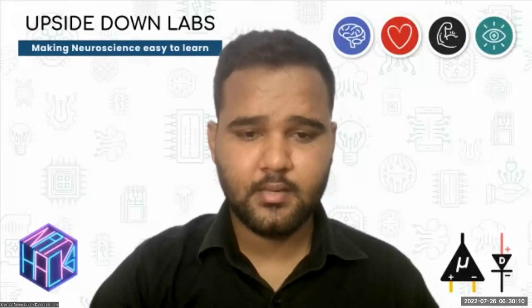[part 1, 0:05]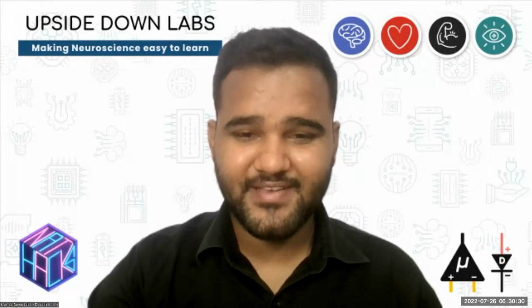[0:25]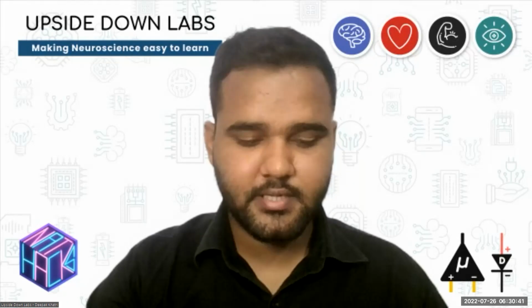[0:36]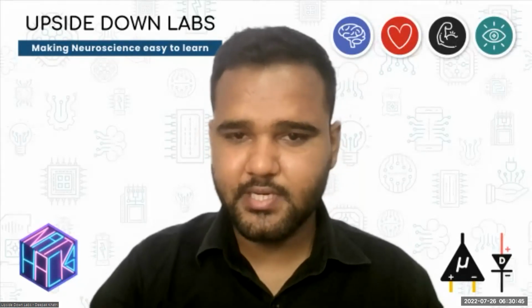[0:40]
So we just start from here, or do we have anything? Yeah. Please go ahead, whatever you have on your agenda. Okay. Perhaps we'll wait just maybe one or two minutes for a couple more people to trickle in. Yeah, sure thing. I'll just start or test sharing my screen. That sounds good.
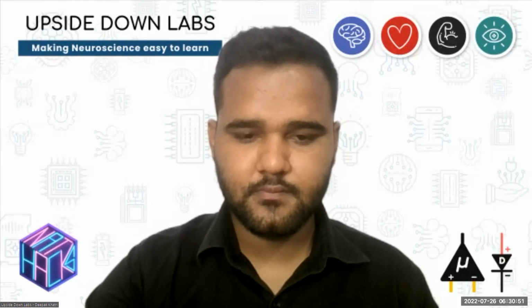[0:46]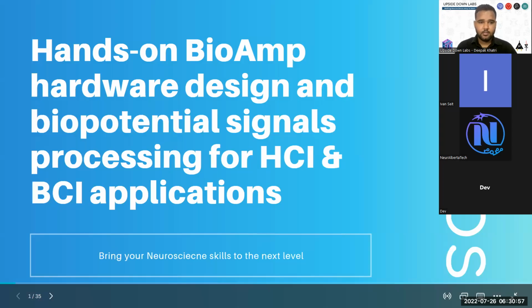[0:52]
I hope everyone is able to see my screen. Yep, we can. And my audio is good, right? Yep. Okay. Let me know when I should start.
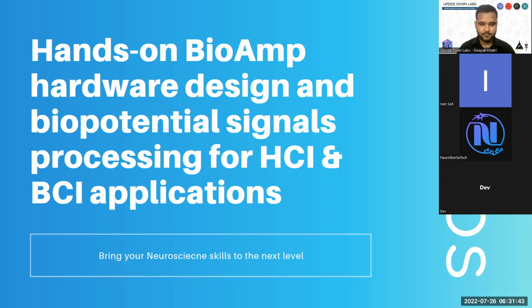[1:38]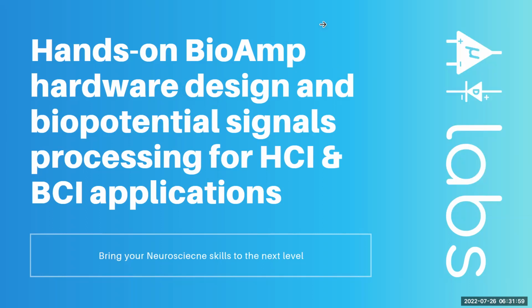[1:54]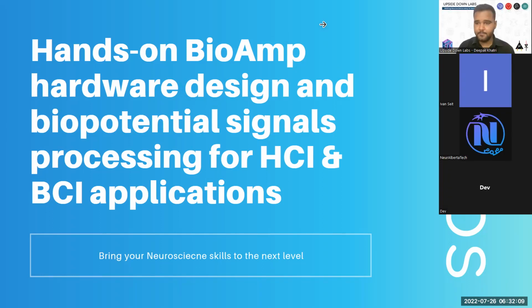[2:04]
We'll give it till 7:02, perhaps. And then this will be recorded, so anybody who misses any bit of it can go back and watch that. So it shouldn't be too big of a problem. Okay, we should be good to start now.
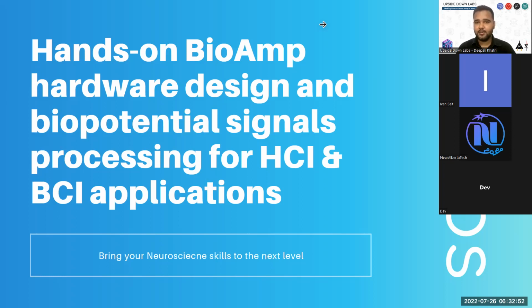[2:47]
Before that, I presented a crude design of a basic BioAmp, you can call it version 0, in 2017. I presented it as a very low cost biopotential amplifier for prosthetics, human computer interface, and things like that. It was a presentation opportunity at my university. Since 2016, I have been working on the designs. It was an iterative process. I learned a lot during the process, and some things I can share with you that will help you to
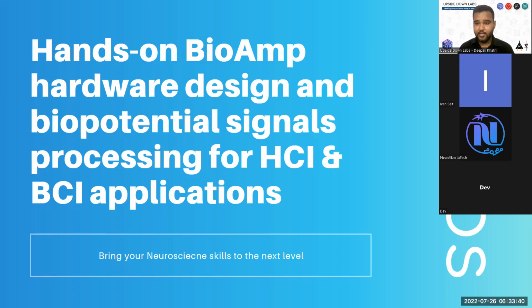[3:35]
design your own BioAmp. So basically, this pre-workshop is on designing or understanding how a biopotential amplifier, the device we create at Upside Down Labs, the BioAmp, works, and how to do the signal processing of the signals you are going to record from your biopotential amplifier for human computer interface and brain computer interface. Basically, I'll try to bring your neuroscience skills to another level.
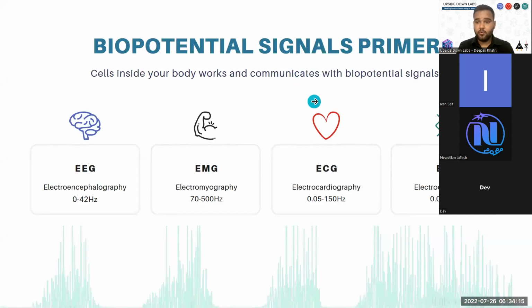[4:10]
If you don't already know, the biopotential signals generated from your body include EEG, EMG, ECG, and EOG. The frequency bands we have mentioned here are debatable, but basically EEG, or electroencephalography, is a signal generated from your brain, which comes in a frequency band of 0 to 42 hertz or something like that. And this EEG is used to basically create brain computer interfaces like your Neuralink and such.
Then we have EMG, or electromyography, that comes in the frequency band of 70 to 500 hertz. Some scientists claim it to be around 0 hertz to 2000 hertz or something like that. So it is debatable. You can check online, and maybe you can create your own biopotential amplifier with a very wide band and let us know your results.
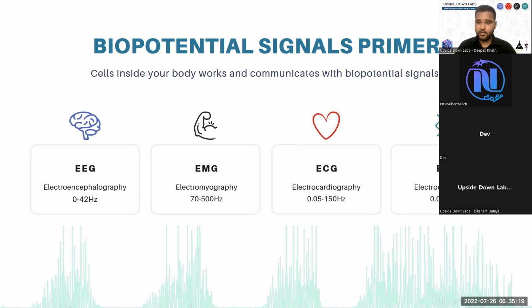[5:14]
Then we have ECG, or electrocardiography, which is a signal generated by your heart. Basically, a sinus rhythm is created which travels to other parts of your heart and creates an ECG, the signature that your heart is beating, and it comes under 0.05 hertz to 150 hertz. When we record ECG, we usually tend to go with 0.5 hertz to 40 or 45 hertz to reduce the 50 hertz and 60 hertz noise. Most of the time it is to reduce your 50 and 60 hertz noise.
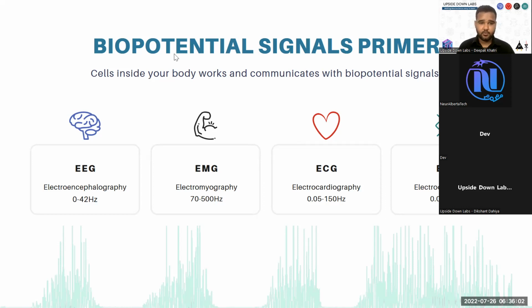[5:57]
Then we have electrooculography, or EOG, which is basically the signal generated by your eye. Your eye has a dipole, or polarity, and when you move your eye, the polarity creates a deflection, and you can record it on the surface of your skin. This signal is also debatable, but it comes under 0.05 hertz to 20 hertz.
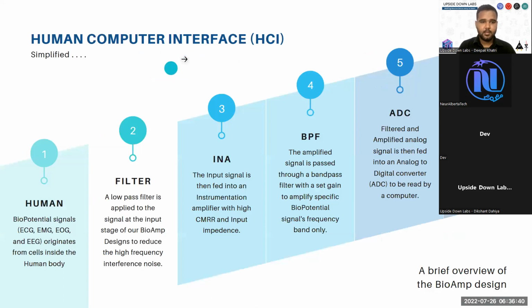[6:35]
This is a very simplified version of a human computer interface we tend to use at Upside Down Labs. Biopotential signals generate at a human level on your skin. We record everything non-invasively. So your biopotential signals, which include ECG, EMG, EOG, and EEG, originate from your cells inside the body. These biopotentials come in various voltages, and EEG is very minute, in microvolts. Then you have EMG, which is very prominent on skin near your muscles, and it comes around some millivolts. To create a human computer interface, you basically create a biopotential amplifier, or BioAmp.
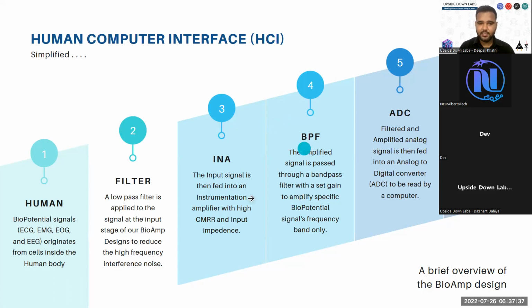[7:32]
This is basically the part which is your BioAmp. First, you initialize the recording or connection process via a filter. It is a low pass filter to reduce the high frequency interference noise, basically the noise created by all the EMI generating devices around you, that includes your mobile phone towers and your tube light, things like that. So basically, we want to reduce the signals that are going to be picked up by our biopotential amplifier, because the electrodes that we are going to use with it act as antennas, and they usually pick up these signals quite well.
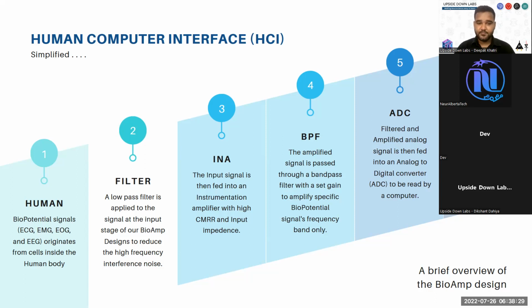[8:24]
So we filter the input signal via a low pass filter. Then we have an instrumentation amplifier stage. An instrumentation amplifier is a neat little hack you create using op-amps. It is a very detailed and very well studied design for increasing the common mode rejection ratio of your basic general operational amplifiers, and increasing their input impedance. You want both to be high.
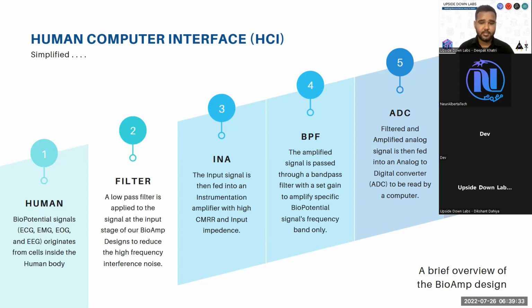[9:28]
CMRR should be more than 100 dB, and your input impedance should be in the range of 100 mega ohms, to provide a very low path for the current to flow from your skin to the amplifier, because your skin impedance is in some mega ohms and you want the amplifier to not load the skin. Our BioAmp example is around 1 giga ohm, and above that it doesn't load the skin at all. And CMRR, which is common mode rejection ratio, is more than 100.
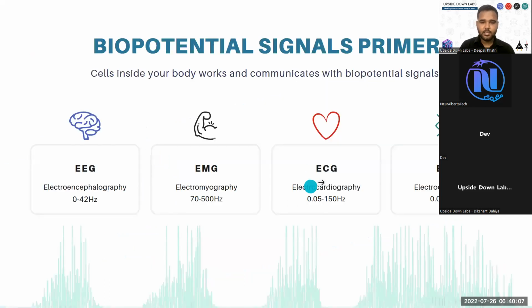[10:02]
Then we take the instrumentation amplifier output and pass it through a band pass filter. Basically we try to use what we have here. So we create a hardware band pass filter that will allow these bands to be passed through the filter and remove all the others and discard everything as noise.
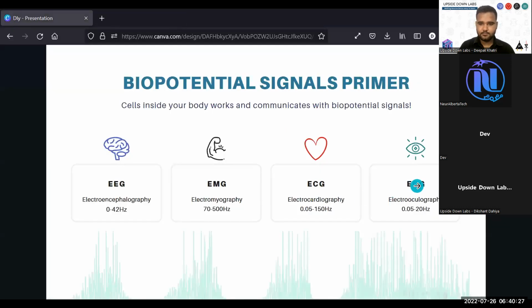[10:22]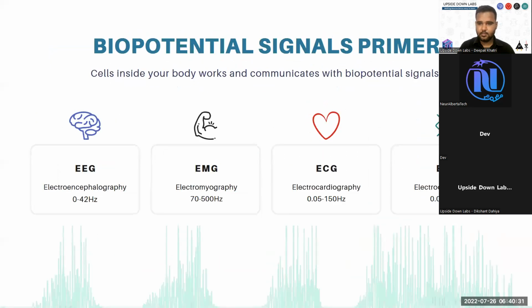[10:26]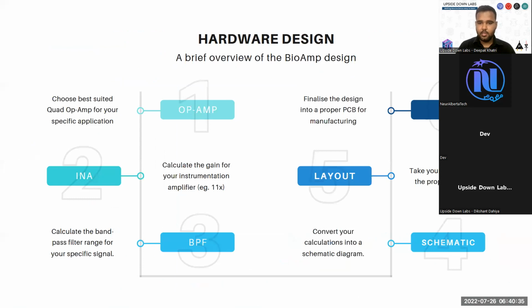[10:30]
Then the band pass filtered signal will be applied to the ADC, which is your analog to digital converter. These ADCs will either be connected to an MCU, microcontroller unit, or these can be standalone units directly connected to your main computer. These are basically used to convert your analog signals to digital signals that a computer can read. And this entire setup is basically your human computer interface.
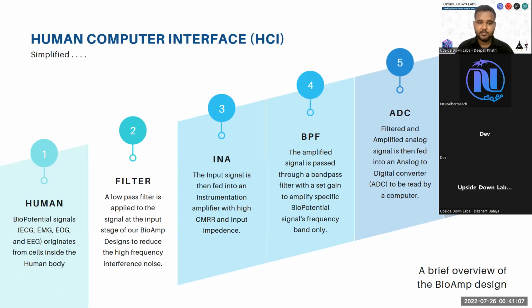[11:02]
You start with the signals generated from the human body and you convert them to computer readable values so that you can infer some information from the signals you are going to record. That includes EEG based data for meditative data, as in if you are focusing, if you are sleeping and things like that. Your ECG data, like your heart rate, and if you have any heart ailment you can detect that also. For EMG you can use the signals for healthy patients to improve their workout, and for patients who lost their limbs to create prosthetic arms.
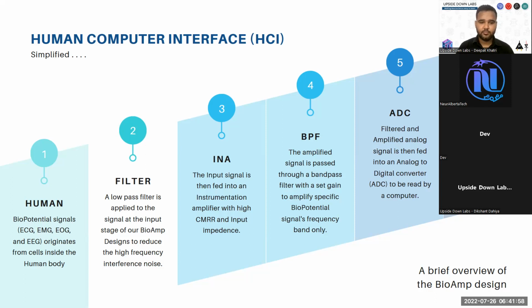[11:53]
So you can create a human computer interface in a way that you record the signal from the remaining part of the muscle, and you try to infer some information from the signals to control motors in a way that you can create a prosthetic arm. Then for EOG you can create low latency game controllers and other peripheral devices that augment human capability in a scenario where other means of communication with the computer are not available. Basically, when a human is paralyzed, you can use EOG signals. Most of the time, your eyes will still be functional, so you can create an EOG based interface between a human and a computer to provide some ability to control the computer or provide information to the outer world just by blinking.
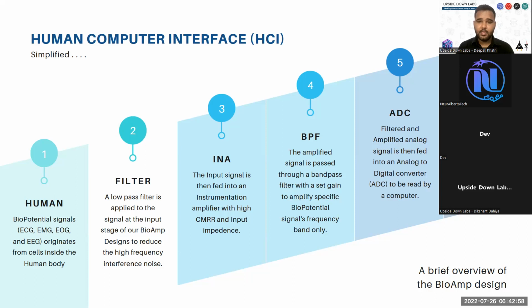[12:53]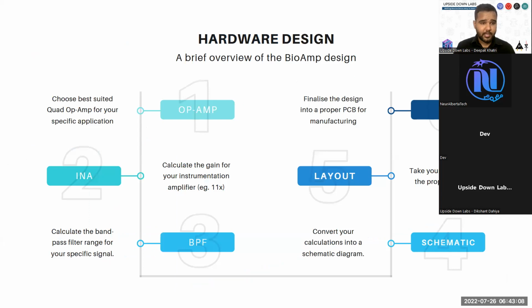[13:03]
Then we covered EEG, EOG, EMG, and ECG. For the BioAmp hardware design, this is mostly how we design BioAmp at Upside Down Labs. There are various different methods, and this is what I came up with after years of designing biopotential amplifiers and trying to build a very sophisticated piece of hardware that can record your biopotential signals
in a way that you can easily record EEG signals, because EEG signals can be the hardest signals to record because of the way we use electrodes. We don't have a very direct connection to most of the brain, and we tend to use either gel based electrodes, and if you go with dry electrodes it makes the impedance very high. The electrode impedance should be low, the instrumentation amplifier impedance should be high. So by electrode impedance I mean the connection between the electrode and the skin should be the lowest possible so that we can record the signal easily.
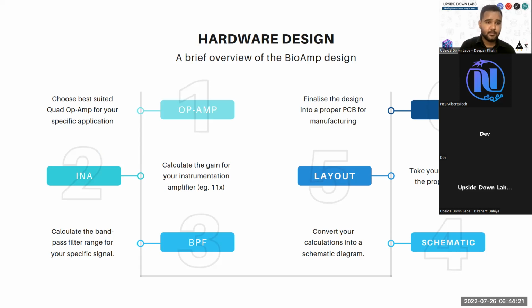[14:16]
So if you want to create a biopotential amplifier, choose the best suited operational amplifier. A quad operational amplifier is recommended for your specific application. We will talk about the characteristics. You will look into the operational amplifiers in a later slide. Then you have to do some calculations that include the calculation for your instrumentation amplifier and the band pass filter.
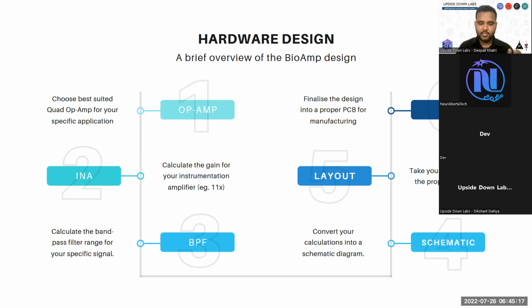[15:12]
For the instrumentation amplifier, you go about setting up the gain. We usually keep the gain at 11x, and for the band pass filter, we change it around. For EMG, we keep the gain at 200 with a frequency band of 72 hertz to 720 hertz. Then for EEG, we keep the gain at 1000, and we keep the band pass filter from 0.5 hertz. We try to go down to 0.5 hertz, but some parts, or how we use the part size, limit us in that way. So we only have 3.3 hertz to a specific endpoint that is around 40 hertz to 45 hertz.
This biopotential amplifier that you create for the brain can also be used for your heart and your eye. The overall gain for your EEG system, that includes your brain, heart, and eye biopotential amplifier, will come around 11,000 gain. And for the EMG biopotential amplifier that I talked about, with 220 gain for band pass and 11x for your INA, it will come around, I think, 2,400 something.
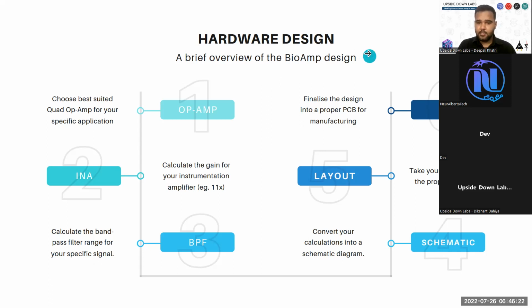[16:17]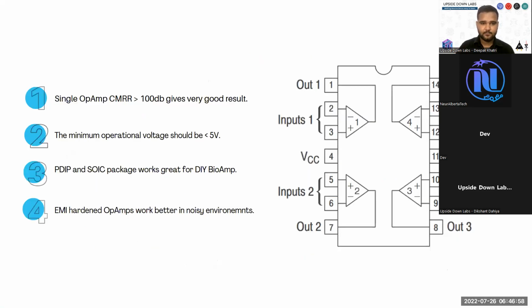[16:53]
Then we convert everything we have calculated and finalized for the operational amplifier into a schematic. In KiCad, we use open source software for all our designs. So for schematic design, we use KiCad. Then for layout, we also use KiCad. It's basically the same EDA suite. Finally, we have our PCB. We will look into the schematic, layout, and how the PCB looks in later slides also.
For a quad operational amplifier, you look for CMRR to be more than 100 decibels for a good result. That will eliminate your interference noise, your 50-60 hertz noise, very easily. Even if the charger is connected, our BioAmp chip doesn't pick up 50-60 hertz noise in most scenarios. If the impedance of the electrode is very good, you will not see any deflection or any 50 hertz noise. Even if you don't use any software filter, you will not see any 50 hertz noise.
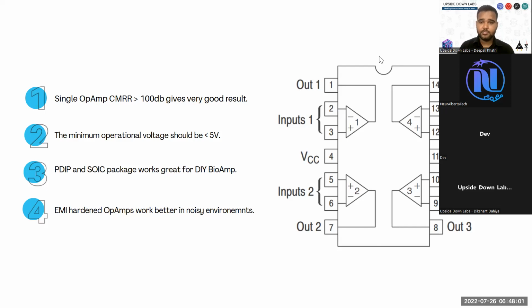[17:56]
The minimum operational voltage of your quad operational amplifier, or any operational amplifier you are going to use, you can also use 4 discrete operational amplifiers, should be less than 5 volts because all your MCUs, like your Arduino, work on 5 volts. If you are going towards other modern microcontrollers, they are going to work with only 3.3 volts. So try to find an operational amplifier that starts working at 1.8 to 2.7 volts and works at least till 5 volts. So it shouldn't be less than 5 volts, and it shouldn't be more than 5 volts if the maximum operational voltage is considered.
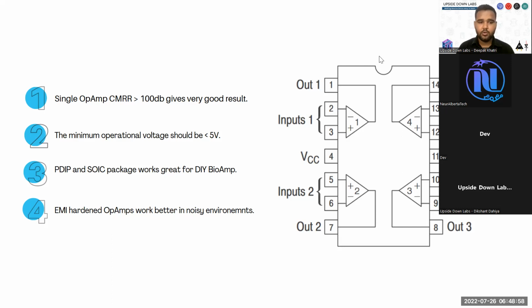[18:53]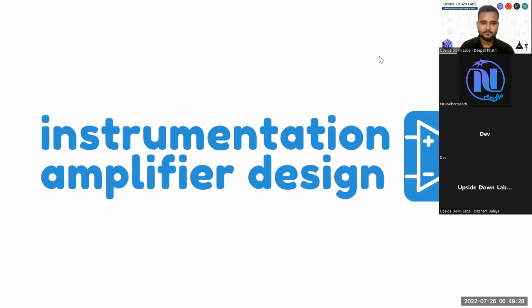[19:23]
Then you look for the package for your IC. If you are trying to do a DIY setup for the biopotential amplifier, go with PDIP, or plastic dual inline package, for your operational amplifier. Your LM324 is a good option. If you are trying just for the EMG, you can try LM324. For your EOG and ECG, you can try TL074 at a higher voltage. The old TL074 starts working at 7 volts, so I don't really recommend that, but if that is the only option, you can use it with higher voltage. Let's say at 9 volts, you can use a 9-volt battery. Don't use any power supply or power adapter to power your setup while you are developing the BioAmp. Then if the chip has EMI hardened characteristics from the manufacturer, it is better in noisy environments.
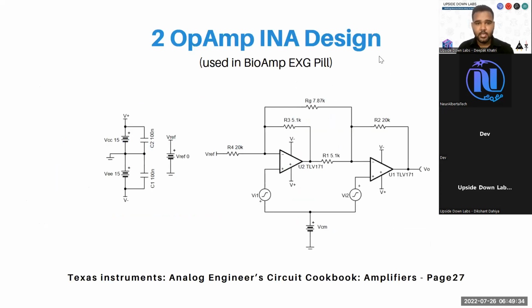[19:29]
Let's see how to create your instrumentation amplifier using discrete operational amplifiers. There are 2 options. One option is a 2 operational amplifier instrumentation amplifier design that is used in the BioAmp EXG Pill. For this design, you basically need 4 resistors and 2 operational amplifiers. These 4 resistors, R4, R3, R1, and R2, are required. This RG is optional. It is to set the gain only.
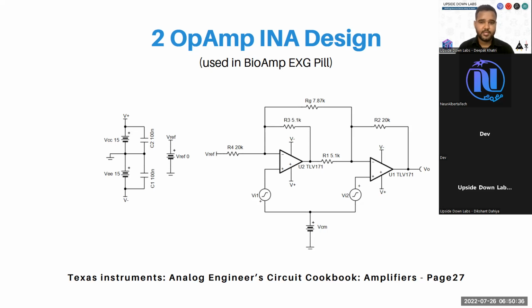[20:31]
So this is a very simplistic design of an instrumentation amplifier, and if you are trying to create something from discrete components, and you don't have laser precision for setting up the resistor values, this is the best option in our use case, because you have very little chance of using mismatched components and degrading your CMRR. So basically, you use all the components with 1% or better accuracy. If the components are not matched, your common mode rejection ratio will degrade a lot, and you will see a very noisy output, and most of the time you will see just the noise. Even if the signal is there, you will see just the noise in scenarios where an AC appliance is very close to it.
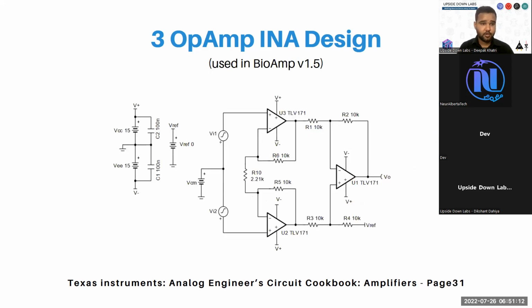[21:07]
Second option is your 3 operational amplifier instrumentation amplifier design, which is used in BioAmp version 1.5. All the terms I am talking about here, BioAmp EXGPL, BioAmp version 1.5, if you are not familiar with these, you can go to github.com/upsidedownlabs and look at the open source files for these designs. I will share a link. Basically, my partners will share the link for BioAmp EXGPL and BioAmp version 1.5.
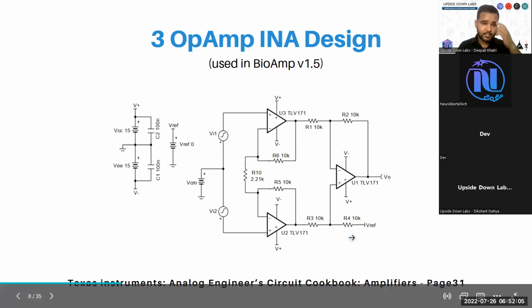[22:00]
In this 3 op-amp design, you have to use at least 6 matched resistors and 3 operational amplifiers. These resistors R6, R5, R3, R1, R2, R4 should be matched. These should be the same, these should be the same, and these should be the same. Then only your instrumentation amplifier will work in a way that you will be able to record biopotential signals in a clean manner. Then you have your RG here, which is not optional in this case. You have to use a resistor to set the gain.
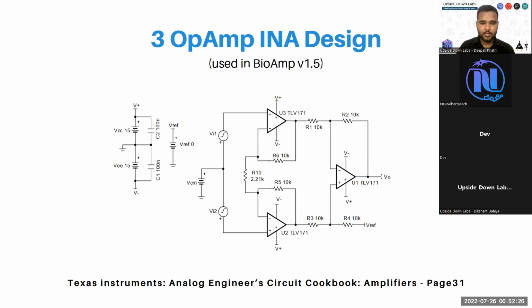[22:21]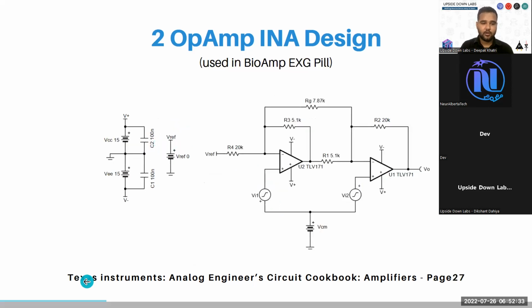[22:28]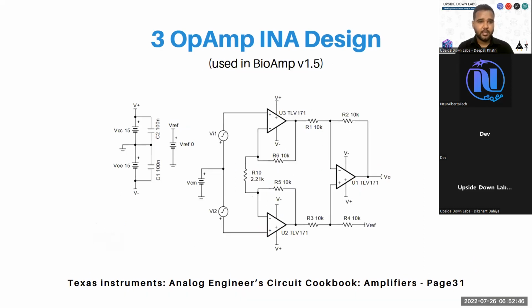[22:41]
All the calculations for these 2 operational amplifier and 3 operational amplifier designs can be found in the Texas Instruments Analog Engineer's Circuit Cookbook for amplifiers. On page 27, you will find the 2 operational amplifier instrumentation amplifier design, and on page 31, you will find the 3 operational amplifier instrumentation amplifier design.
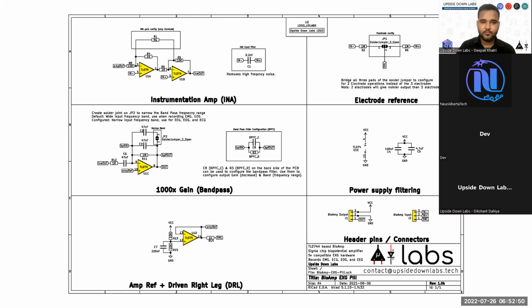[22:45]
This is a schematic of a BioAmp EXG Pill. You have your 2 operational amplifier instrumentation amplifier design. Basically, this resistor should be matched. This resistor should be matched. Then on the back of the BioAmp EXG Pill, you will find that there are 2 pads where you have the ability to change the gain. So RG is optional, so we have provided pads for this component. Then we have a 1000x gain band pass filter.
If you do the calculation with the equation provided in the Texas Instruments design cookbook for amplifiers, you will find the gain for this instrumentation amplifier is 11. Then for this band pass filter, we have used a high pass filter here and a low pass filter here. So this is basically an active band pass filter, and this band pass filter which we have used in BioAmp EXG Pill is very narrow, but it allows for all the biopotential signals to be recorded. Okay.
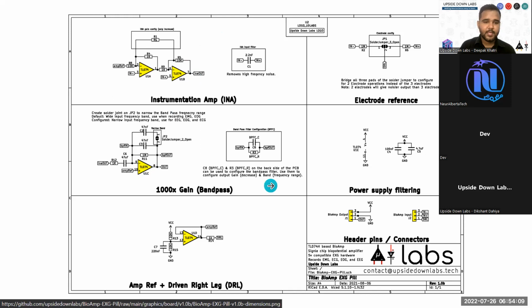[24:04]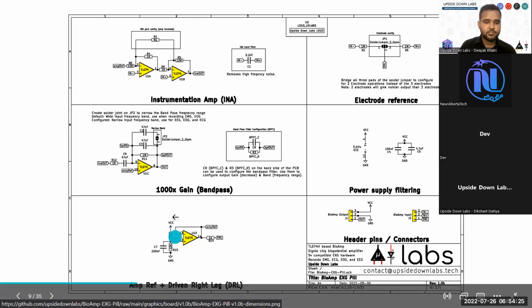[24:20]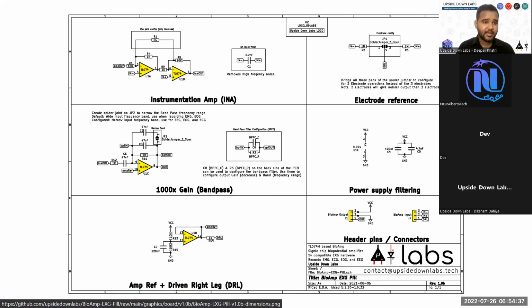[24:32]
Then to set a reference voltage, we usually tend to go with whatever we provide to the microcontroller divided by 2, so VCC by 2. For that, we use 2 resistor dividers to create a voltage divider at the midpoint of the VCC, and we use a buffer to create an amplifier reference, and the same reference is used for the human also. So basically, the third wire which we use for all the biopotential amplifiers is a bias or the reference. This reference is VCC by 2.
If you are not understanding what I am saying in terms of what is VCC, what is this driven right leg, these are some terms you can basically find on Google. If you don't find that, you can contact us at contact@upsidedownlabs.tech for any further information. We'll be happy to guide you through the process. Also, you can create issues if you find some discrepancy in the repositories or the projects we are creating. That includes BioAmp HCI, BioAmp version 1.5, and some more hardware projects are also coming in DIY form factor. That includes BioAmp Biscuit, BioAmp Candy, and BioAmp Patch.
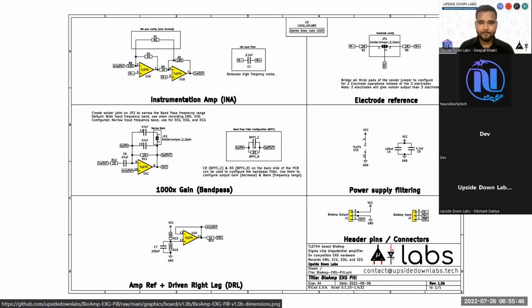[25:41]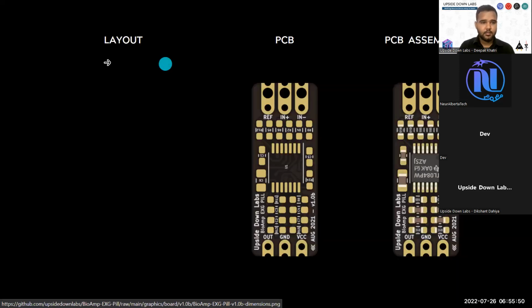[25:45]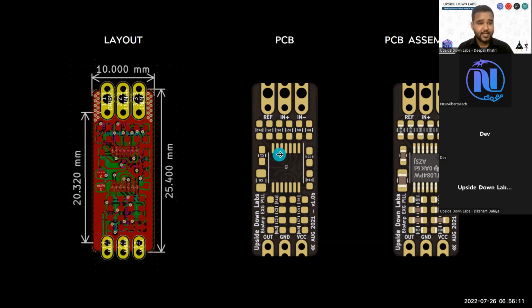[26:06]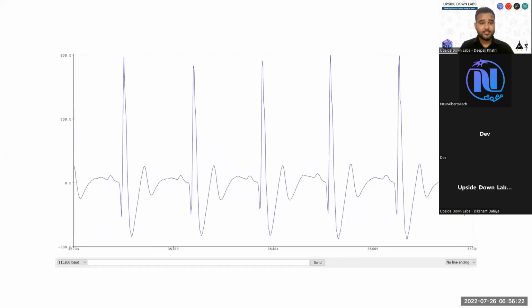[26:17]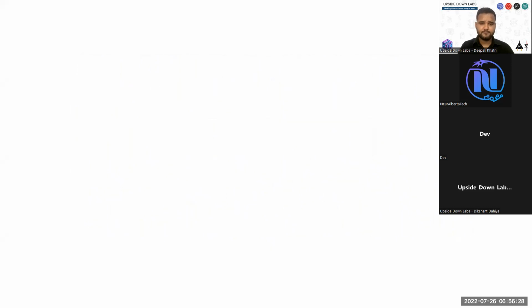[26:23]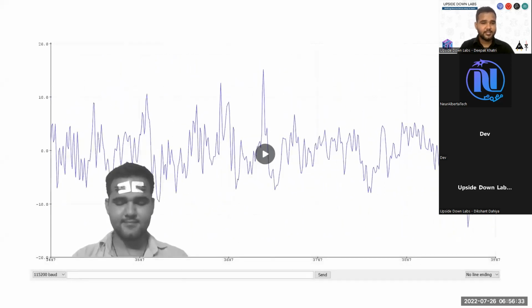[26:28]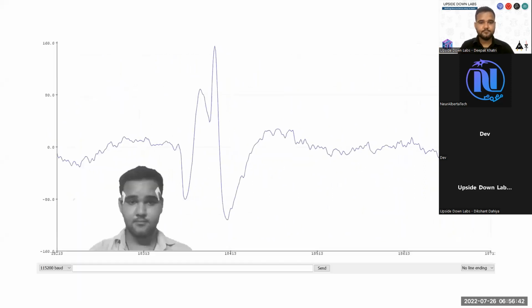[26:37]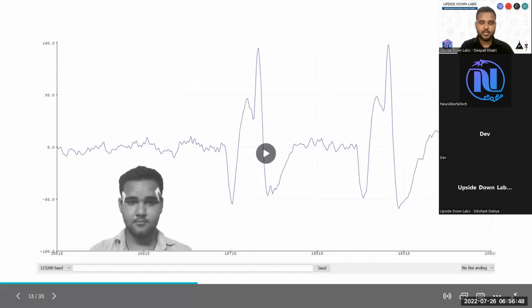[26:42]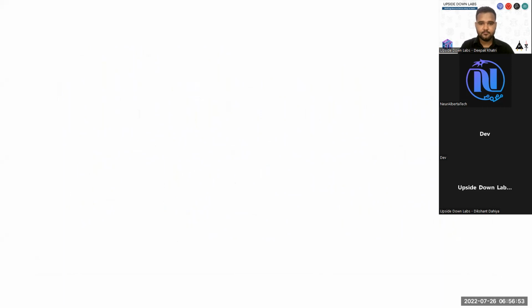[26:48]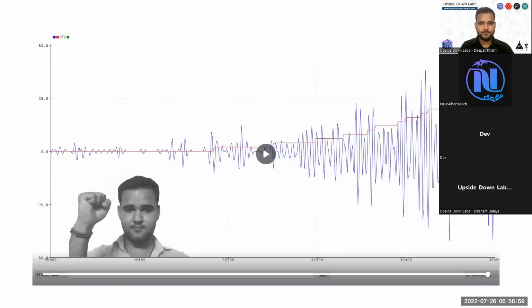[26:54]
This is an ECG signal we recorded using BioAmp HCI, a very early version of BioAmp HCI. Then this is the EEG signal we recorded with BioAmp HCI. There is not much to see here, but we'll show you a better demonstration of the EEG signal. Then this is EOG. Whenever I move my eye, the dipole changes, and with that polarity change, you see the signal on the screen. This is the EMG. Whenever I flex my arm, you can see the signal.
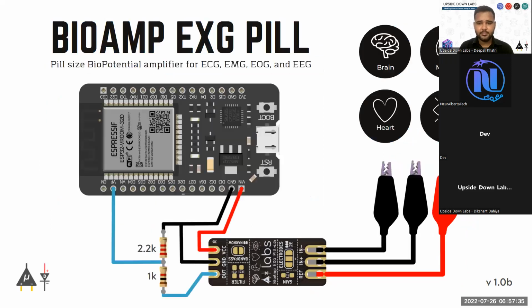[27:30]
If you are using a chip that can work on 5 volts, it is good to go with your Arduino Nano and Arduino Uno. If the biopotential chip you have created only works above 3.3 volts, this is the best option for you to use Arduino Nano or Arduino Uno. Even if you want to use the biopotential chip with 3.3 volt compatible devices, you can do that. And this is how the circuit will look like.
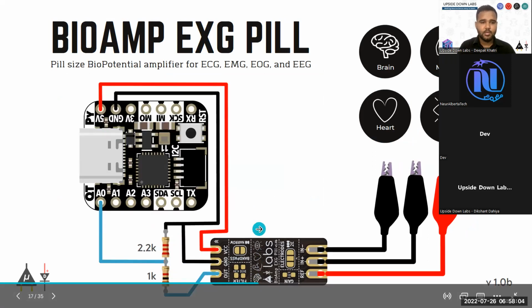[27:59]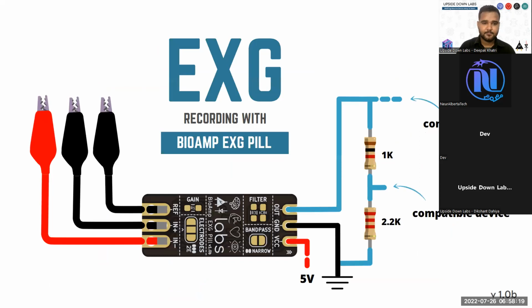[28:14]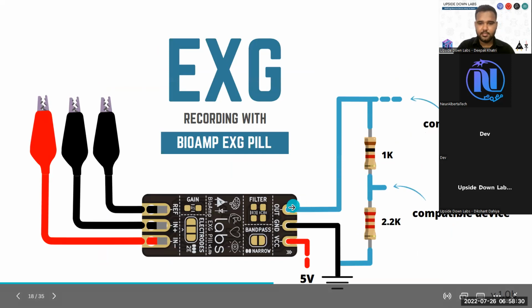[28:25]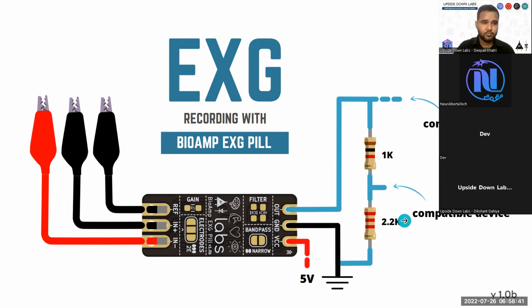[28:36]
If the previous connection diagram was not clear enough, let's see it here. When you output the signal, that output would be 5 volts because we are delivering the VCC at 5 volts. If you divide the 5 volts in a proportion of 1 and 2.2, you will find that it is now compatible with 3.3 volt devices also. You can find the entire calculation, and how we use the ratio divider method to convert the sensor output from 5 volts to 3.3 volts, on online platforms also, like Google.
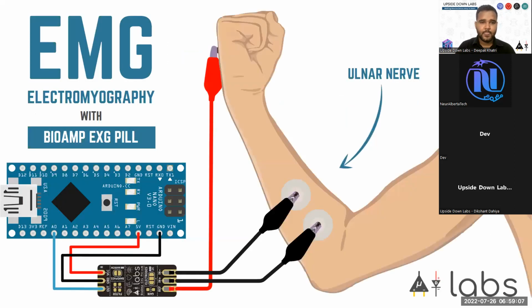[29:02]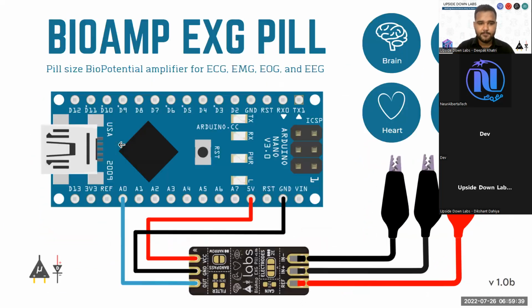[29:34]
Let's see the connections you have to make for recording some of the vibrant signals. For EMG, we usually tend to go with the ulnar nerve because this is a very prominent nerve which can create very high potential spikes, and this is most accessible in our practical scenario. So we use the ulnar nerve to record EMG signals. What I have shown in the previous demonstration, you see, I'm using ulnar nerve signals.
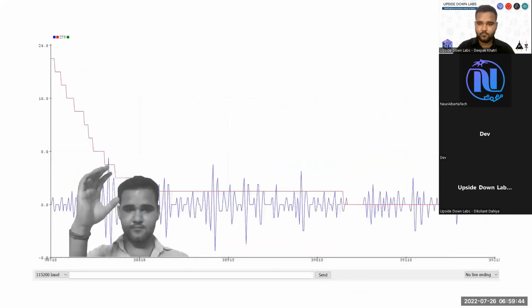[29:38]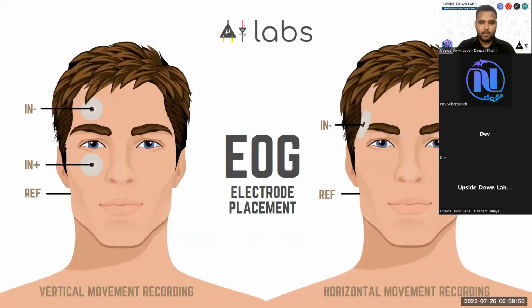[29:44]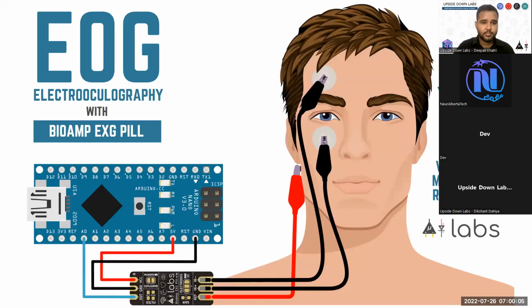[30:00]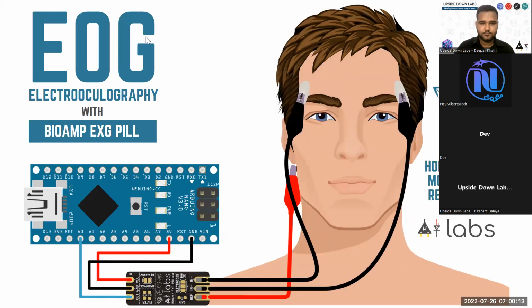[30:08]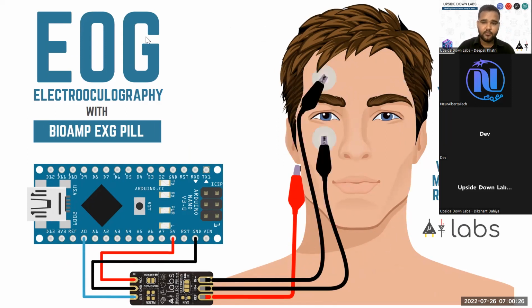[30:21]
Then we have the EOG biopotential recording setup. For that, you tend to go with either vertical recording or horizontal recording. This is how your EOG recording setup will go if you are going to use BioAmp EXG Pill with your Arduino Nano. This is for your vertical, this is for your horizontal movement recording. In horizontal movement recording, you basically can detect the gaze of the eye, and for vertical movement recording, you can detect blinks very easily.
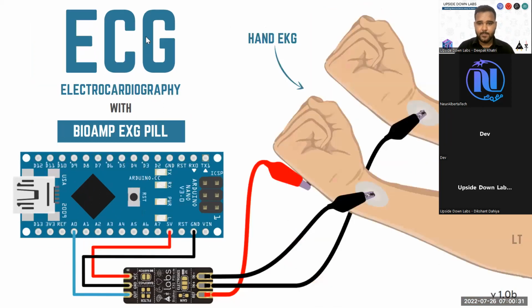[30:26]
For ECG, you have two options. You create a path around the heart, as in you connect electrode one here, and a reference can be connected below your hand. And these are not the only spots where you can connect these electrodes. Basically, you have to create a circuit around your heart to record ECG. This will not be your perfect ECG, but you can easily detect your heartbeats with this. So if the chest is not accessible, this is the way we record ECG, or ECG-like waveforms.
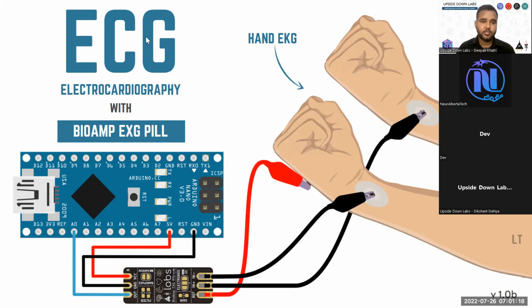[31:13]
This setup is also used in your Apple smartwatch. You have two electrodes beneath your watch that connect to your wrist. Then you have the crown, which is either your positive or negative, whatever they are choosing in their device. Then whenever you want to record the ECG, you start the ECG recording process. You have to place your thumb on that crown, and then only you will be able to record this. This is the way of recording ECG if you are not directly connecting the electrodes to the chest.
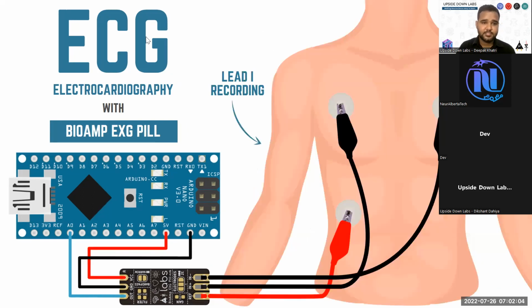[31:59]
Then you have the normal chest method. You connect the lead one recording electrodes to your chest and record your ECG. There are other leads also, lead 2, lead 3, and then you have other augmented leads. If you want to go in depth, you can look for ECG leads online, and you will find all the leads. When we say 12 lead ECG, you don't really mean the leads or the wires coming out of the device or connected to the body. They are basically the signal pathways or polarity of the signal recorded on the heart to create a 3D visualization of the heart in terms of how it is functioning.
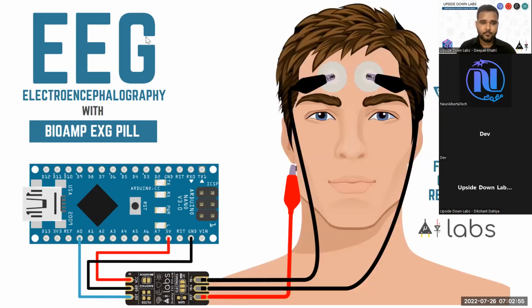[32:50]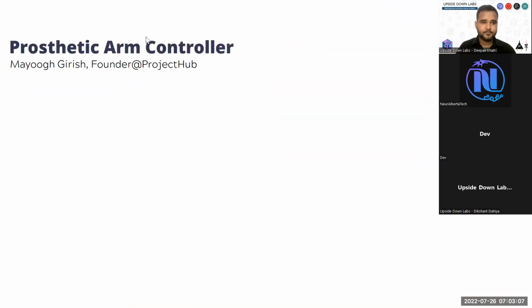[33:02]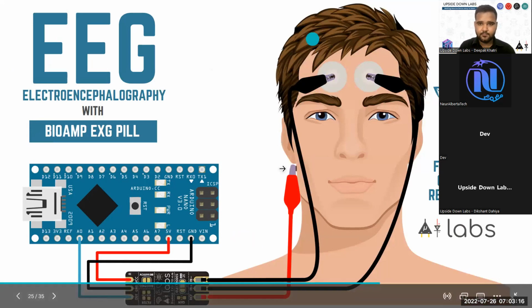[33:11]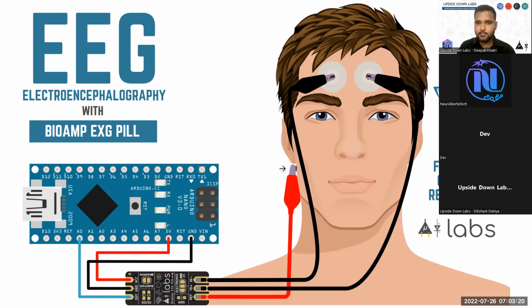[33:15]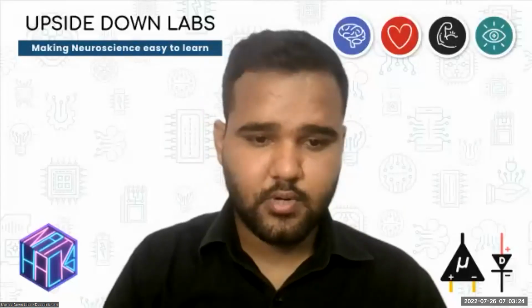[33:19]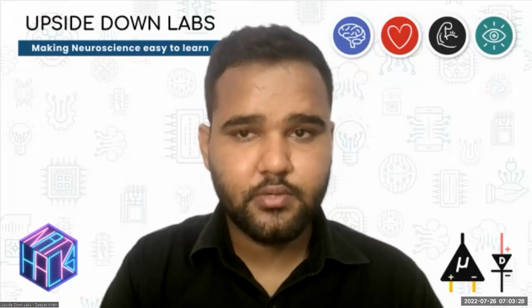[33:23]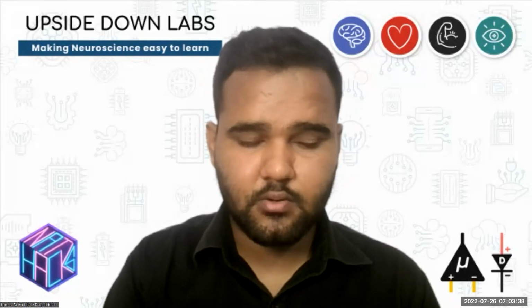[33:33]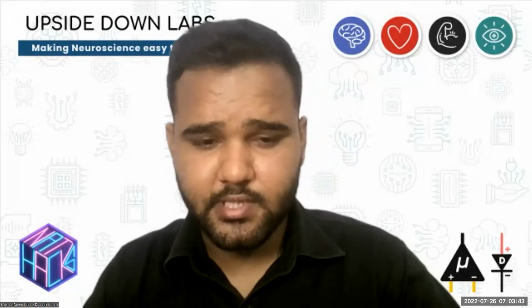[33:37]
Then for EEG, we have the option of recording EEG easily using gel electrodes on the frontal cortex, the frontal part of our head. We'll go into the examples, but I'll stop my screen. So I've stopped my screen share. I will go ahead and present you some more information on how to record, how to design your BioAmp, and I will show the GitHub repository also.
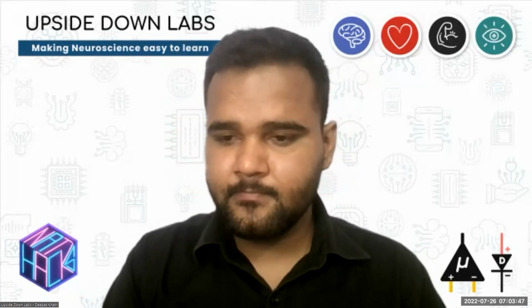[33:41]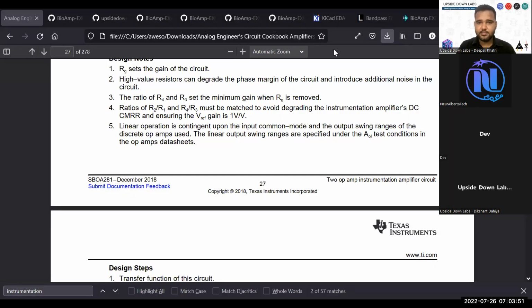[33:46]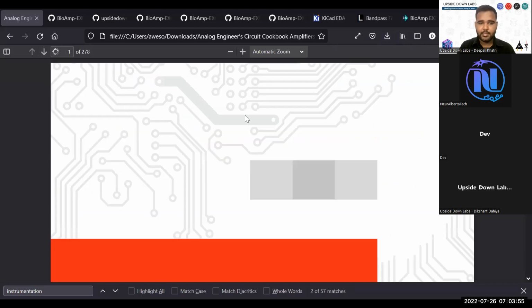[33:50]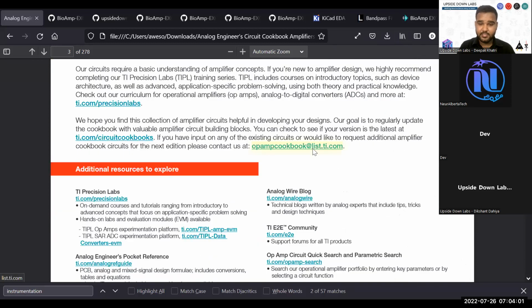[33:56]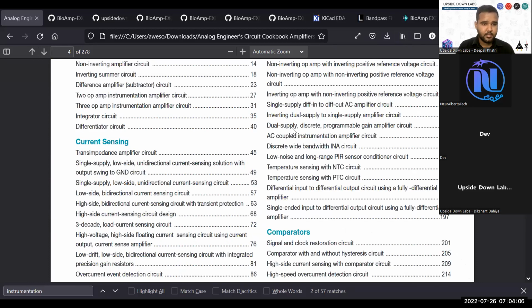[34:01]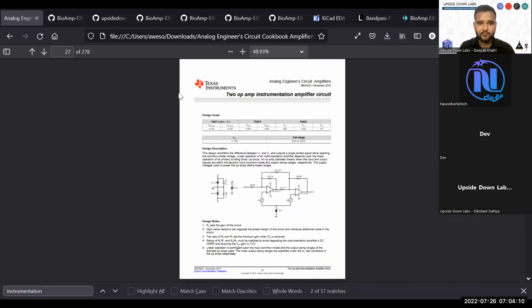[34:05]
Okay, let's start with this. This is the Texas Instruments Analog Engineer's Circuit Cookbook. It includes a lot of basic operational amplifier designs. That includes your instrumentation amplifier also. On page 27, you will find the instrumentation amplifier,
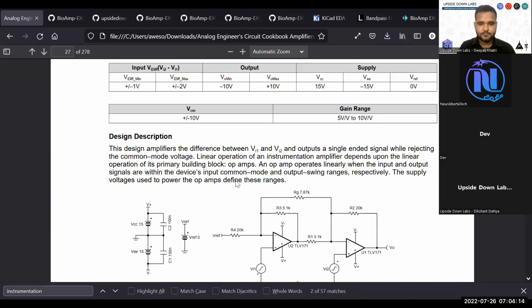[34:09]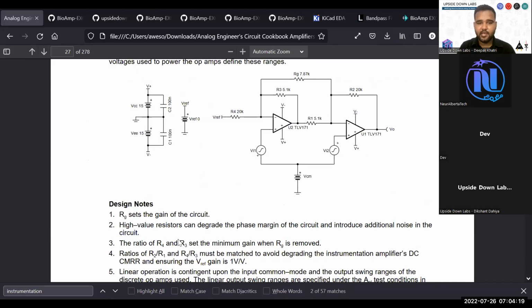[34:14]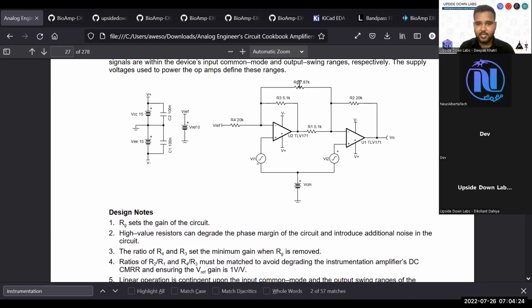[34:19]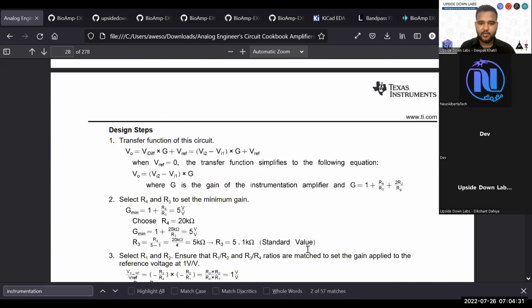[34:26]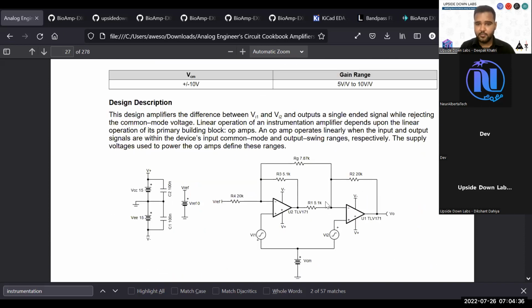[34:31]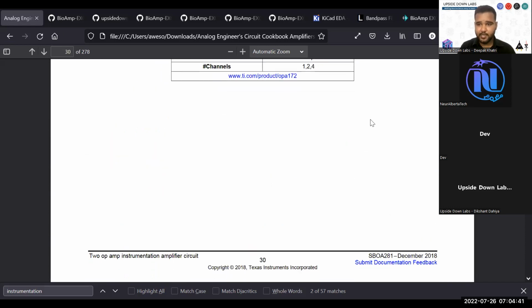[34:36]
a 2 operational amplifier instrumentation amplifier design, and they have explained everything, like RG. This RG sets the gain, then high value resistors can degrade the phase margin, things like that. They have also provided calculations on how to set the gain for your instrumentation amplifier. If you go below this, you will find all the characteristics also. Then you have the 3 operational amplifier design, which you can also use for creating your biopotential amplifiers.
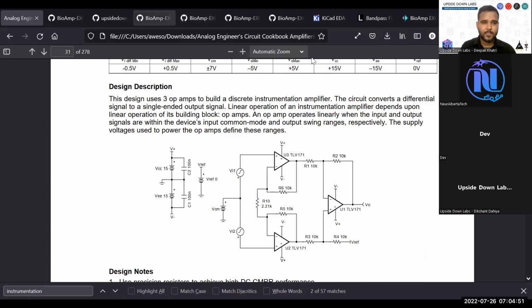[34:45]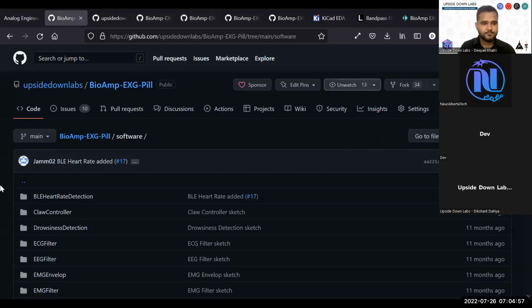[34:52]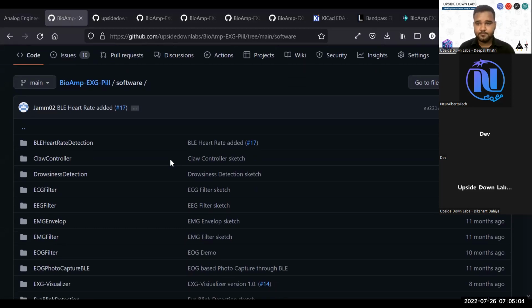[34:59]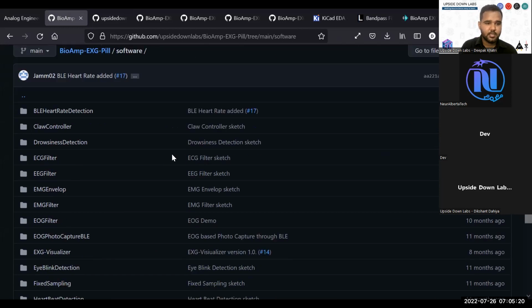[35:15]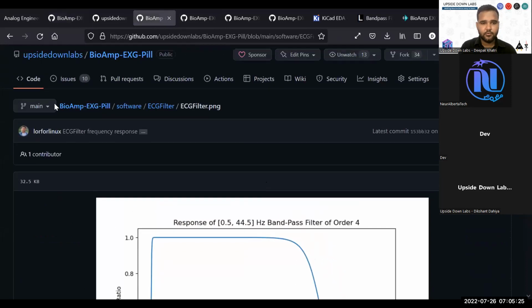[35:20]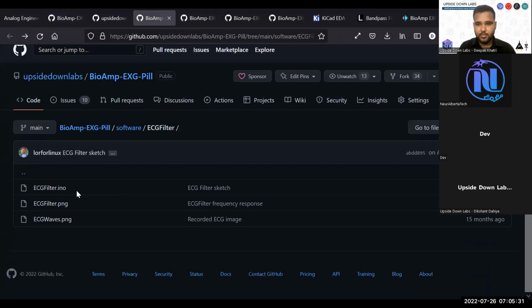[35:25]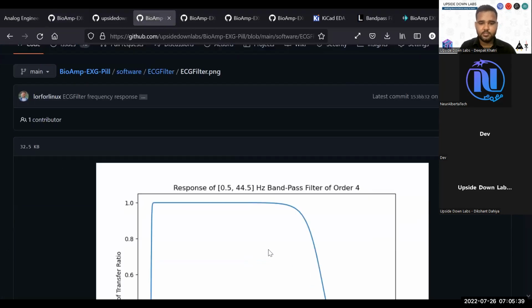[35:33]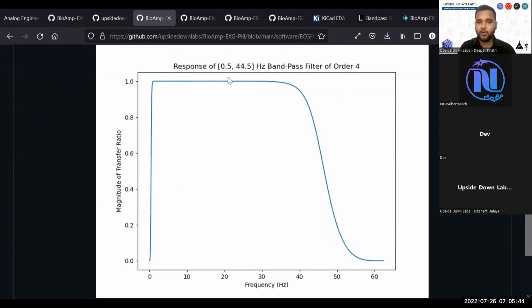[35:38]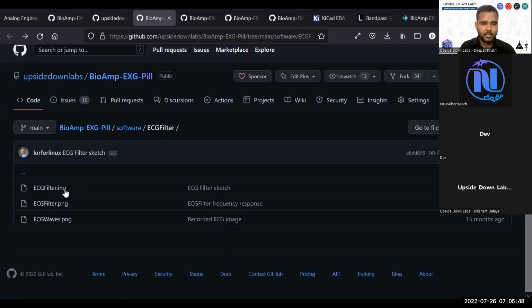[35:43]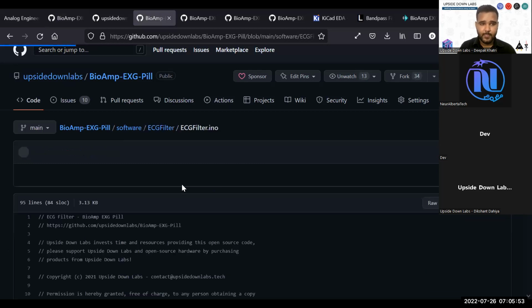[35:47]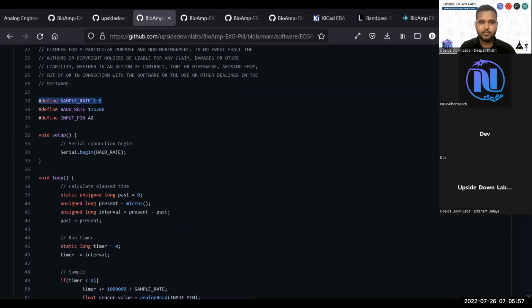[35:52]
For ECG, we are using a 0.5 to 44.5 hertz band pass filter, and if you go to the ECG INO file, you will see that we are setting the sampling rate here, and if you go here, you will find 2 references. Go check these out. This includes SciPy signal Butterworth filter options to create the coefficients for your band pass filter.
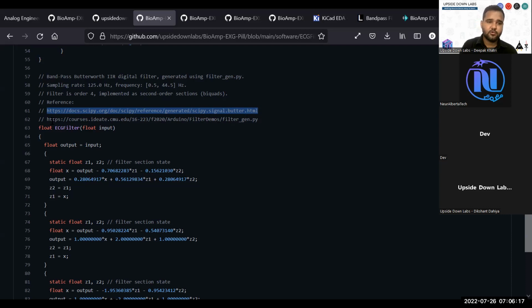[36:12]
Then there is a course from some university. They have created a filtergen.py, basically a Python script that you just have to tell the center frequency, your frequency band. If you are setting the center frequency to 20 and width to be also 20, it will go around from the center. It will take 20 around, or basically you go ahead and check out the filtergen.py for more information. This file will allow you to create these values.
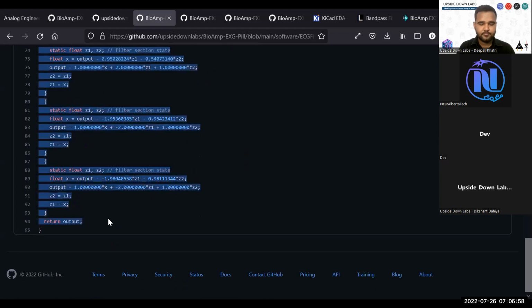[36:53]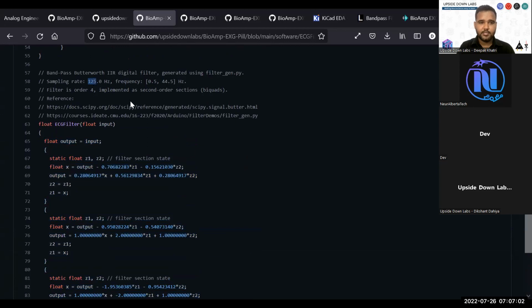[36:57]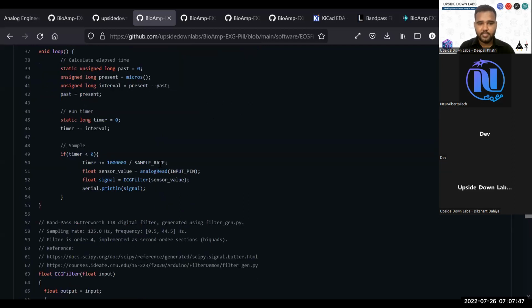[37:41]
You take those values. You also have to mention the sampling rate in filtergen.py, and only for that specific sampling frequency your filter will work. If you want to change the sampling frequency, you have to create another filter. Then we have a normal timer loop, and it works on this sample rate option. So it checks for your microsecond intervals, and based on the value of the timer, it will record a signal at exactly 125 hertz and pass the signal through your filter.
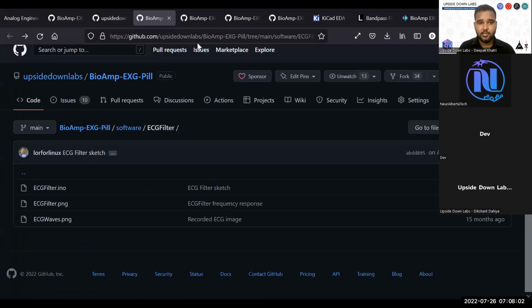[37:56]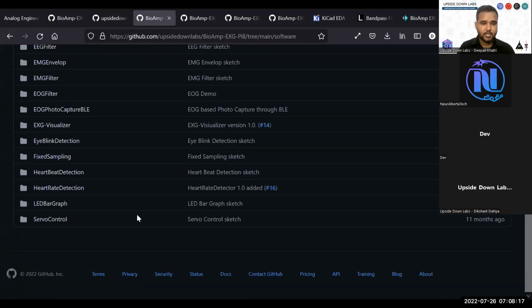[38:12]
It takes the signal every second, it will take 125 analog reads. It will send a signal to ECG filter and output the signal. Then this is the very basic example of your ECG filter. Then you can use this ECG filter software to create more sophisticated software that includes your heartbeat detection and heart rate variability calculation, things like that.
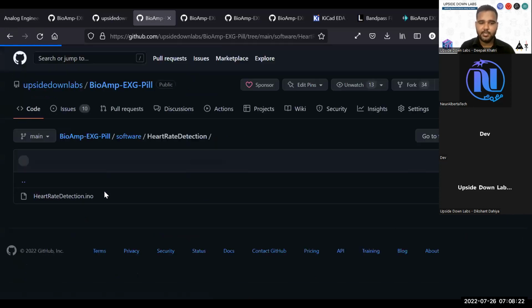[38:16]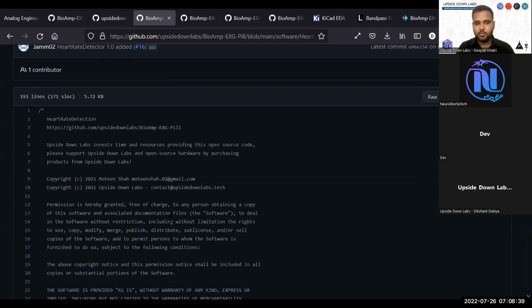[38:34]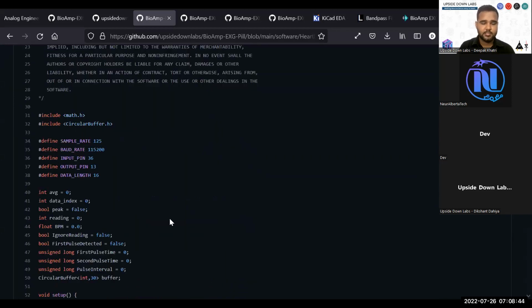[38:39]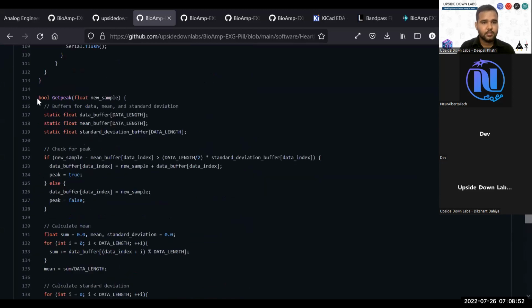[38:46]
We have also included heart rate detection. This is a very unique code, because to detect heartbeats, we usually tend to go with very sophisticated software that can only be created in Python, or that can only be run on computation intensive hardware like your computer, or a single board computer like your Raspberry Pi. You just go ahead and take a look at this.
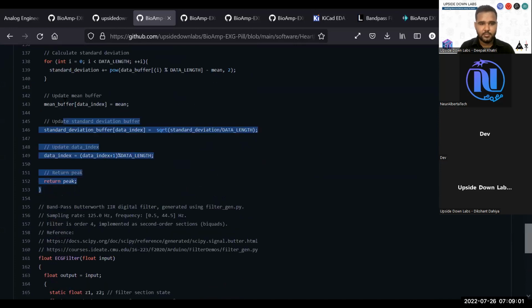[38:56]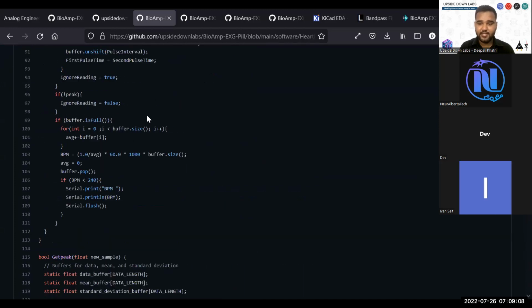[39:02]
We have the filter, we have the peak detection algorithm. This is very unique to Upside Down Labs. You will not find this kind of examples anywhere else. So I highly recommend to check out the software examples for BioAmp EXG Pill. This is the main reason BioAmp EXG Pill is this much successful, because of the software itself. Because the software allows you to do basic human computer interface and brain computer interface designs very easily.
You can detect your ECG. Using that ECG, you can detect your heart rate, and using that heart rate, you can detect your heart rate variability. Using that heart rate variability, you can detect heart ailments. So basically, you start with very basic. All the examples are provided. You start with very basic, and you create a very complex project or very complex piece of software that can save a life.
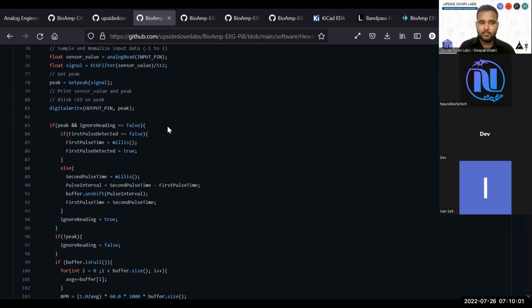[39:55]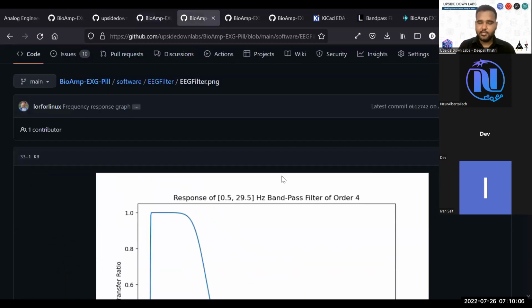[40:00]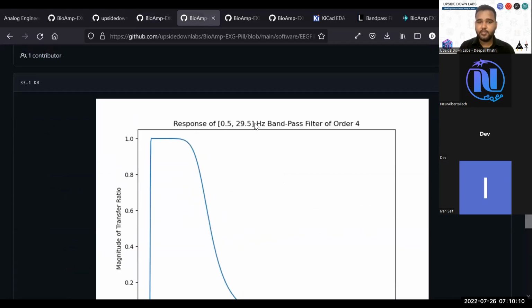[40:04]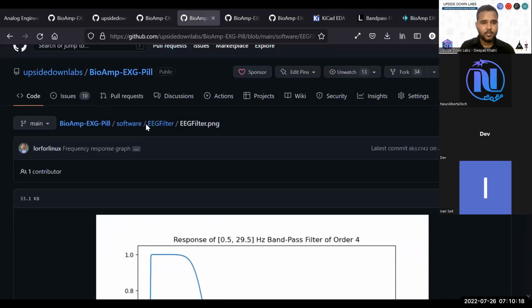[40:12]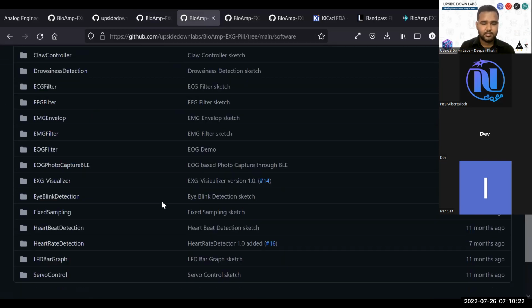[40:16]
It's the same for other filters also. Each filter goes from 0.5 hertz to 29.5 hertz. You can create your own filters also, just like I told you. If you go into the software, let's see all the software examples we have available.
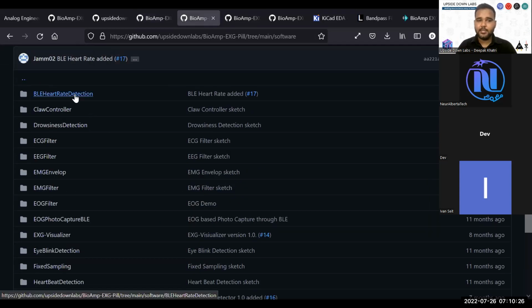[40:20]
We have the BLE heart rate detection. This is an ESP32 based code provided by Mateen, our intern. He created this example to send the heart rate detected values to your smartphone, and basically your smartphone has a UUID for Bluetooth, and it can directly show you the heart rate on your mobile phone, even if you don't have any specific application for that.
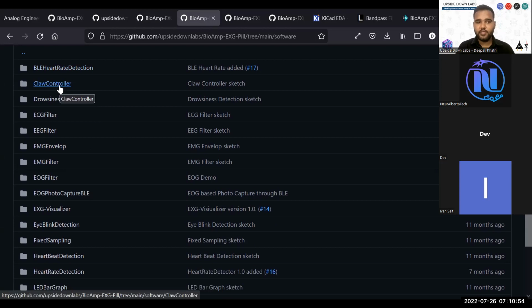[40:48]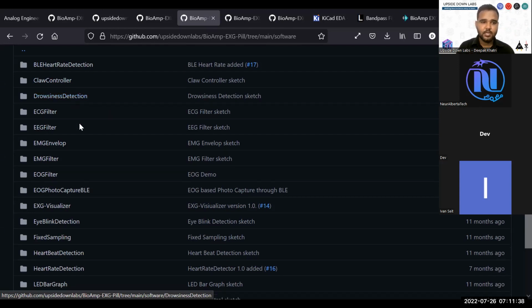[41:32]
Whenever you are not blinking for a specific period of time, that can be 5 seconds to 10 seconds, depending on your choice, it will set an alarm, and it will basically detect drowsiness. Then you have basic ECG filter, EEG filter.
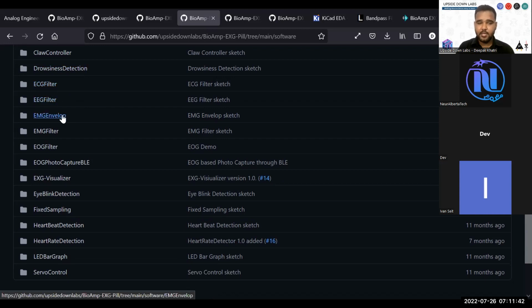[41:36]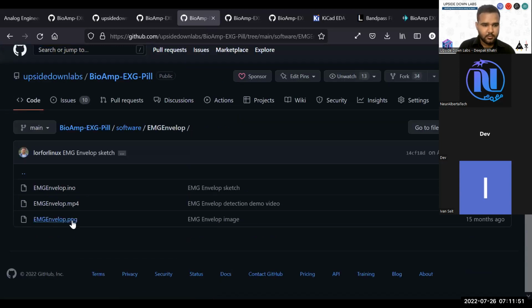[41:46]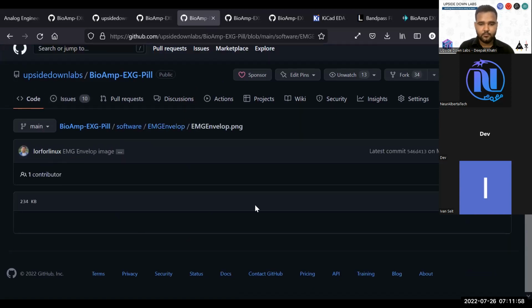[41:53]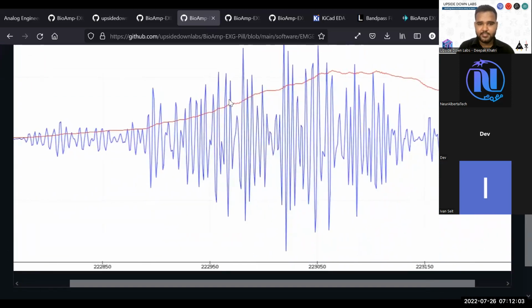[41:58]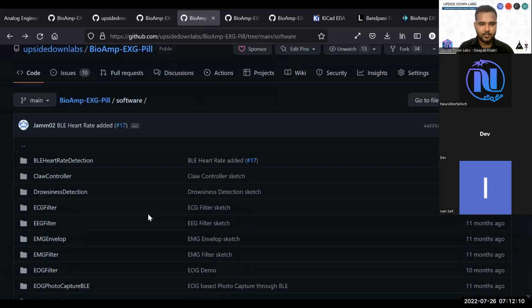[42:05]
For EMG envelope, you take the raw EMG signal and create an envelope around that. Envelope can be seen in the video I just showed you. Basically, this is the raw EMG signal, and this is the envelope created around that signal. Then we have basic EMG filter, EOG filter.
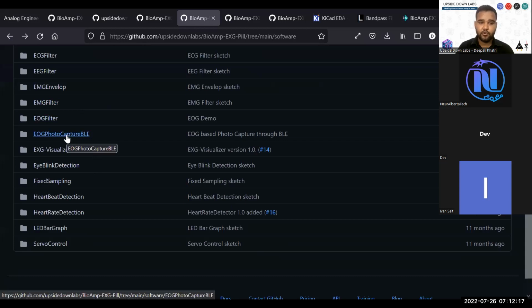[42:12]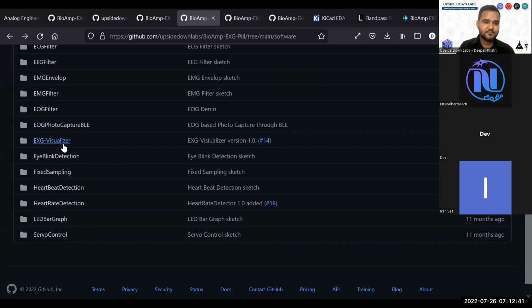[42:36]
This is EOG photo capture BLE. This is a very cool set of program. You flash this to your ESP32 and connect it to your smartphone and use the EOG to detect your vertical recording or blinks. And whenever you blink, your mobile phone will click a photo. It's very cool. Then we have EXG visualizer.
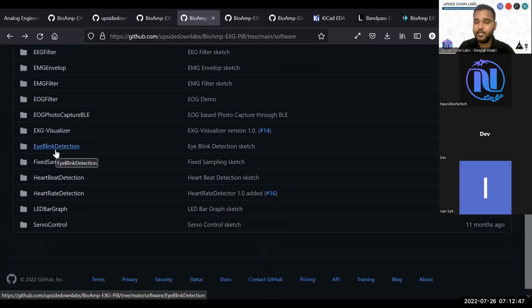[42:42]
This is still in progress. Then we have eye blink detection program. We have fixed sampling, basic fixed sampling without any filter. You can use this to design your own biopotential amplifier filters, and you can use it for other applications also.
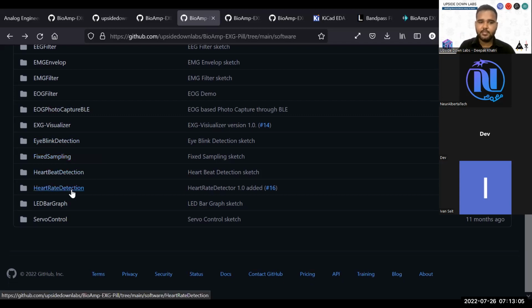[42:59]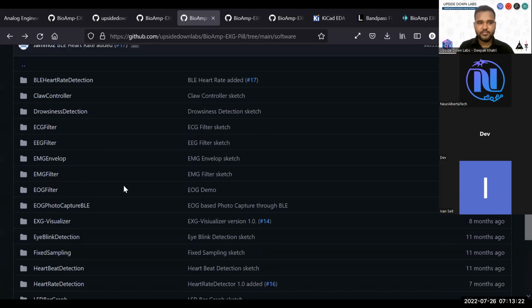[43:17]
Then we have heartbeat detection, heart rate detection, LED bar graph. Whenever you flex your muscle, you can use this program to use as many LEDs as you want, and whenever you flex, the LEDs will show the strength. Then we have servo control, which is also used in a claw controller program.
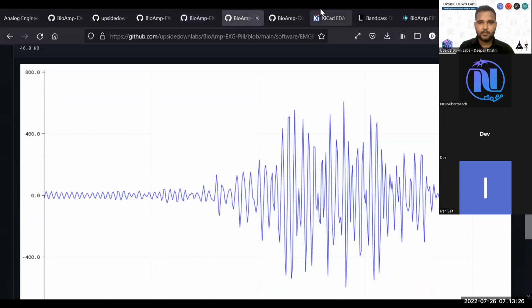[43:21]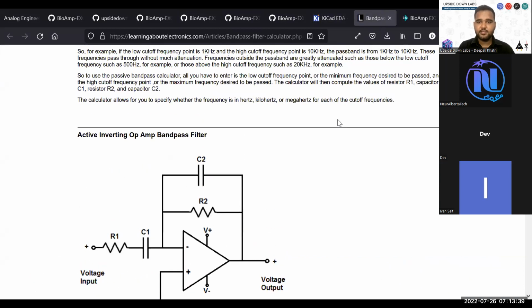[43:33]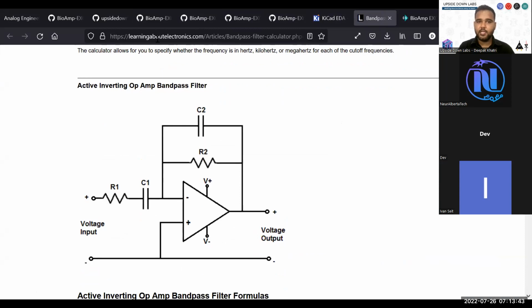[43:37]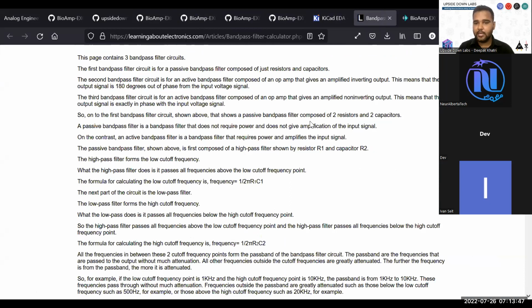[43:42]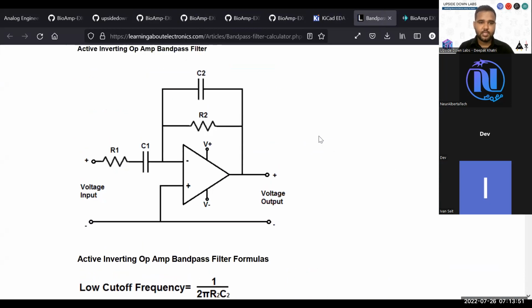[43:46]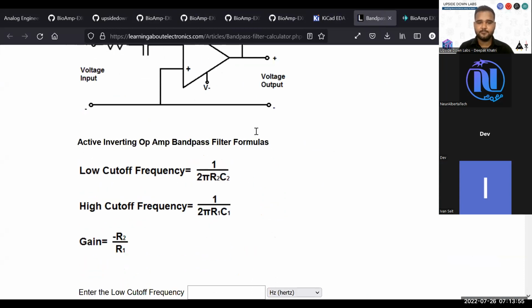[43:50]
If you don't know KiCad, it is an open source EDA suite, which you can use for hardware design. This is a very great website called learningaboutelectronics.com. On this website, you will find a lot of calculators. One of those calculators is your active inverting operational amplifier bandpass filter.
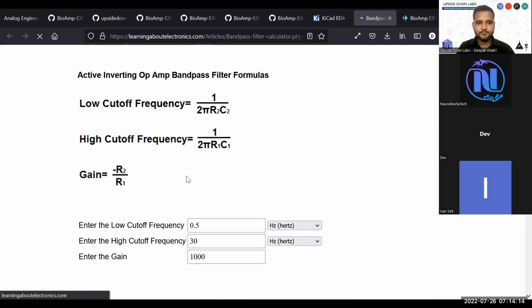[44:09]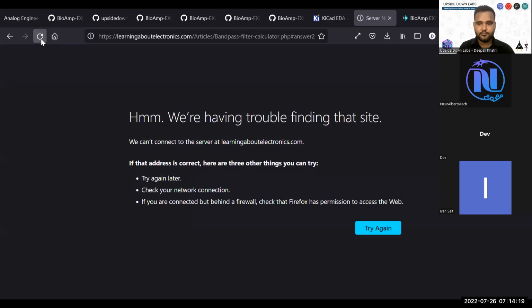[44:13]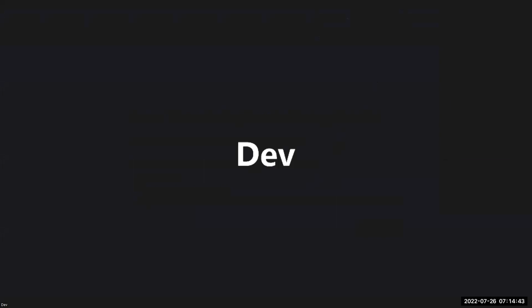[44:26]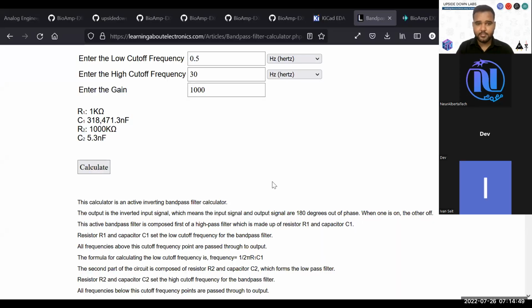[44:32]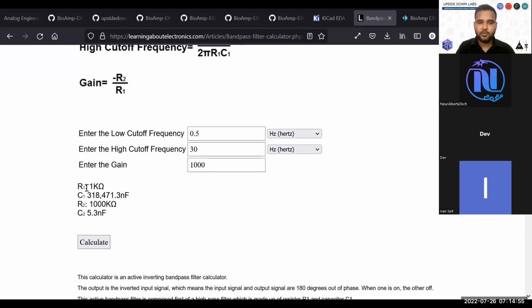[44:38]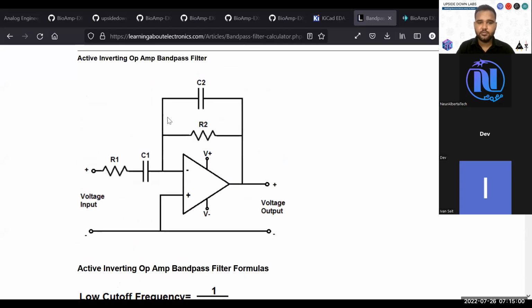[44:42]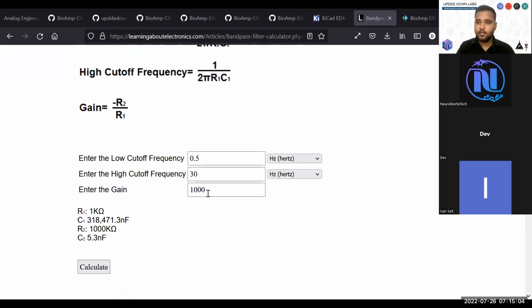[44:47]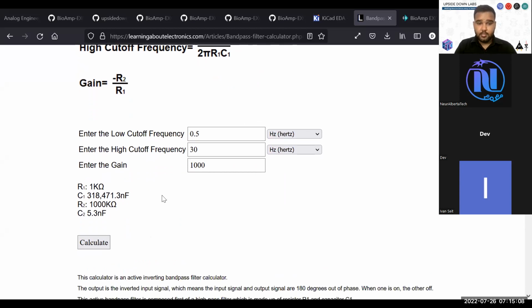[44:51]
Let's say the low cutoff frequency I want is 0.5 hertz, and the high cutoff frequency I want is 30 hertz. Then I want the gain to be 1000 for EEG, and I calculate the values for this. You can check. Sorry about that. So when I hit calculate, you will get the result for R1, C1, R2, C2. These are the values you have to use to create a 0.5 hertz to 30 hertz bandpass filter with 1000 gain. These are not the values you will find
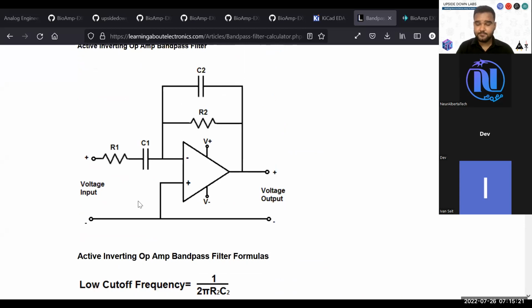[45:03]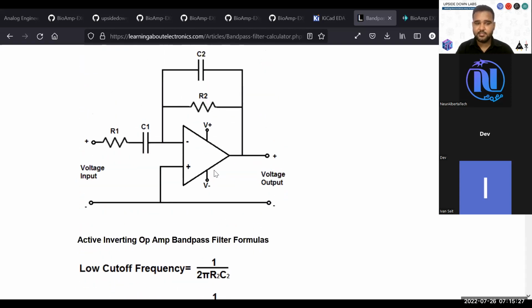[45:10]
in normal circumstances. So you have to do some clever mathematics in terms of changing this high pass filter to something else and this low pass filter to something else. Use available resistors, do some practical experiments, and based on that you will find some good match resistors and capacitors that will provide you with the best results for your specific biopotential recording.
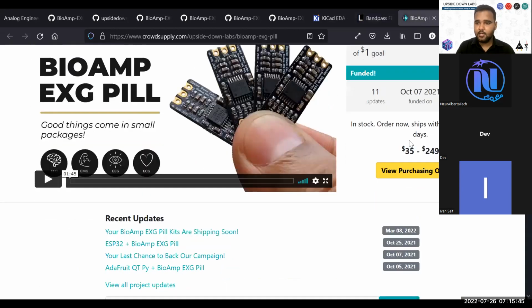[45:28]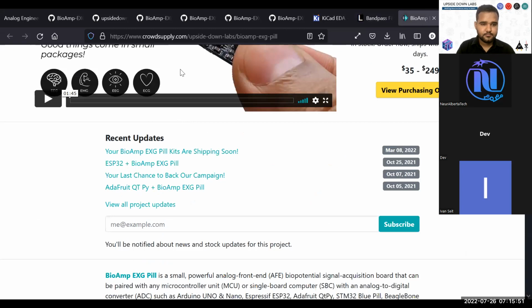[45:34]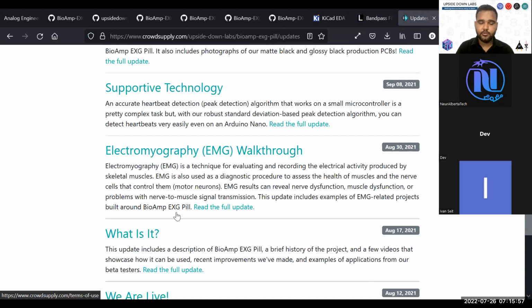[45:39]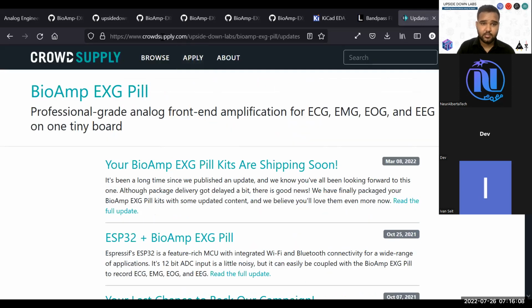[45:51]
Then this is the BioAmp EXG Pill crowdfunding page or Crowd Supply page. On this, you will go to these project updates. You will find a lot of information around how to use the biopotential amplifier, the BioAmp EXG Pill, how people have used BioAmp EXG Pill for their specific applications and things like that. So I highly recommend you to check this out, Crowd Supply Upside Down Labs BioAmp EXG Pill. This will provide you with more information on how to use the device and what the capabilities of a biopotential amplifier created using basic discrete components can be.
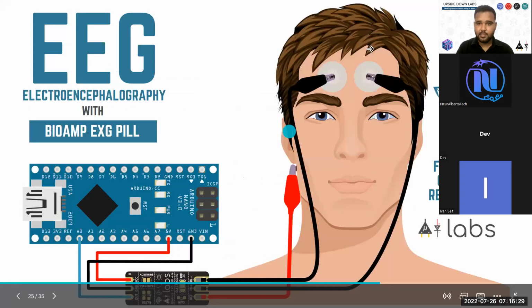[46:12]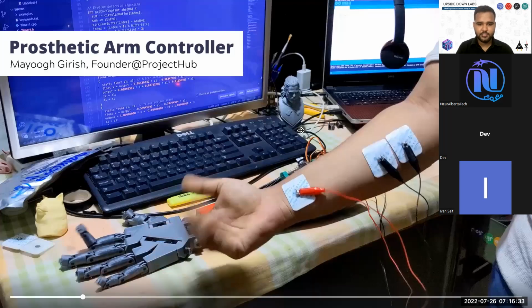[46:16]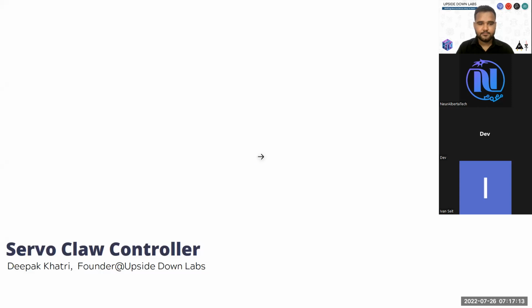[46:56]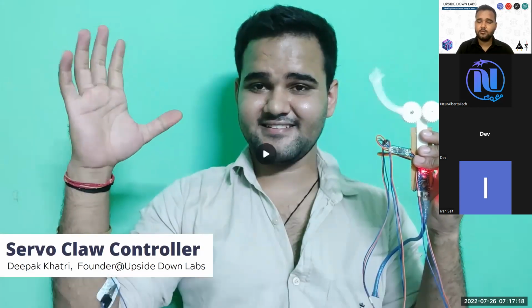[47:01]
This is an InMoov arm. This is an open source prosthetic arm design, a reference design for any prosthetic arm. You can find it on Google. Just search for InMoov. I think this is the name, in-move. This is me controlling a servo claw. The files for this servo claw or this type of servo claw can be easily found on the internet. You just have to download and print.
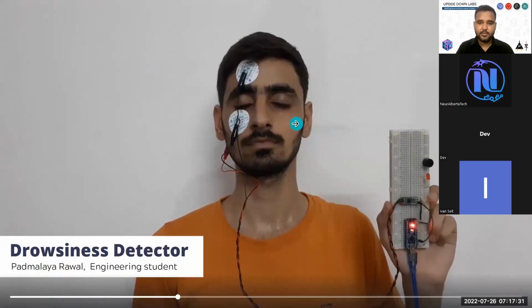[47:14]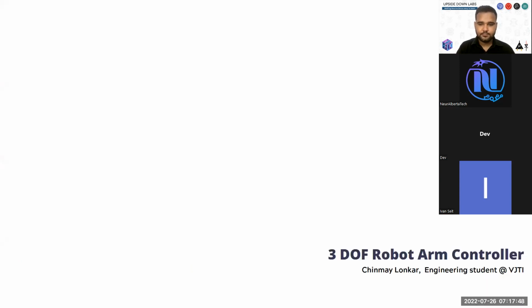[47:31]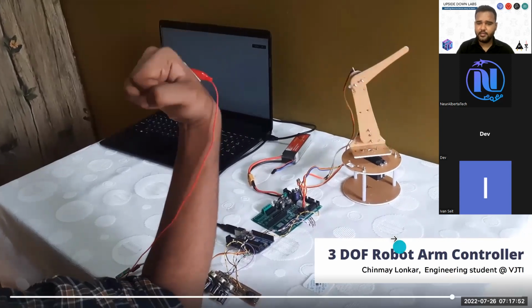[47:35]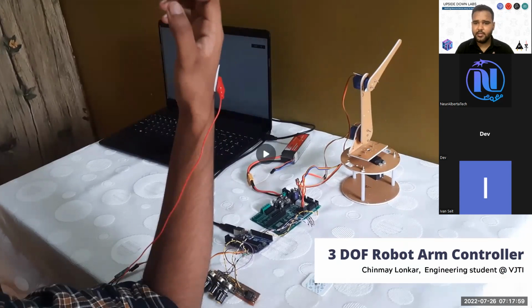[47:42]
This is Padmamalya Rawal showing his drowsiness detection algorithm. So when he closes his eye and doesn't blink for I think 5 seconds, this buzzer and LED will turn on. This is a 3 degree of freedom robot arm controller. You can use any robot arm, but here Chinmay Ronkar used it for his in-house design robotic arm.
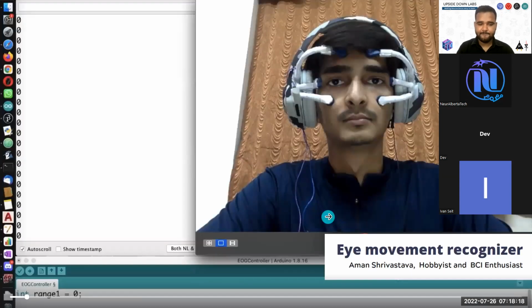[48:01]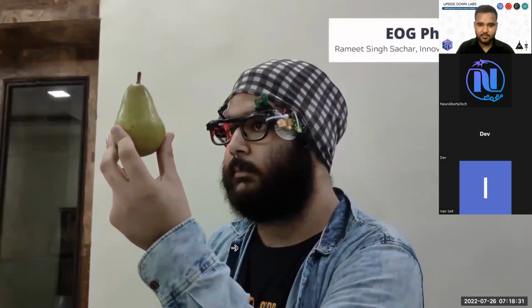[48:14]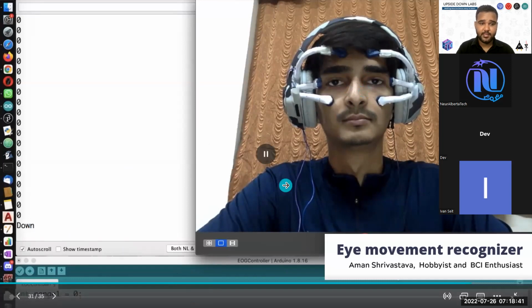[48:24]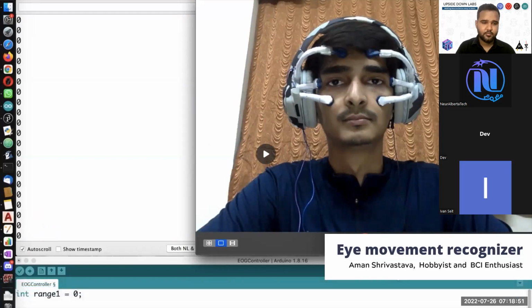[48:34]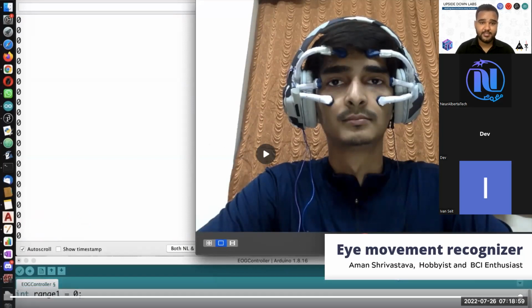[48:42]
You have to focus on this one. Whenever you see Aman move his eyes down, you can see "down" written here, and whenever he moves his eyes up, you will see "up" written here. So it is a very cool experiment. We have not listed this program yet on the software repository, but we'll do it as soon as possible because this is not well tested in our in-house experiments.
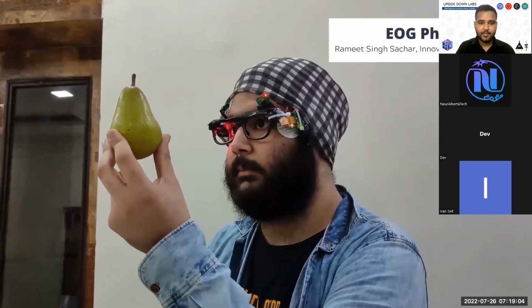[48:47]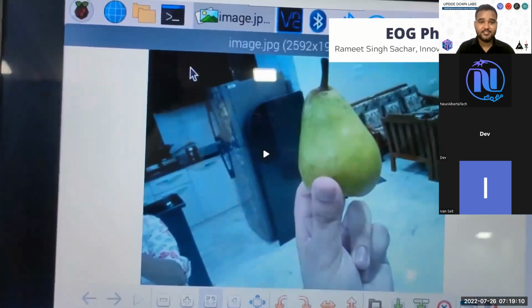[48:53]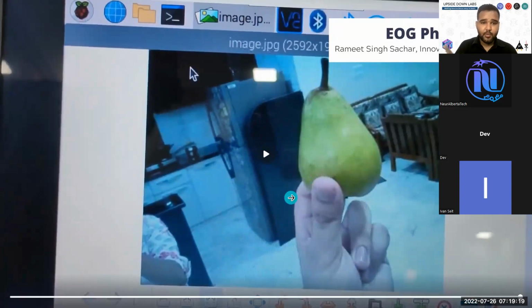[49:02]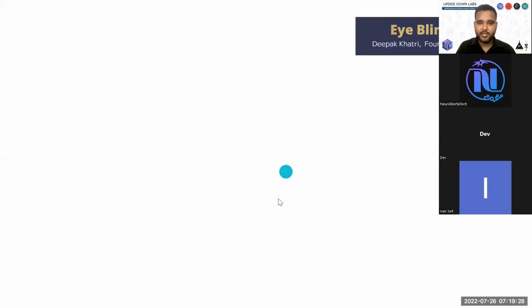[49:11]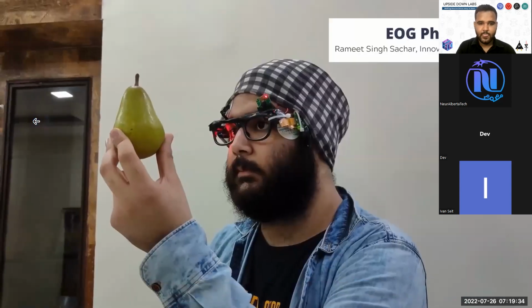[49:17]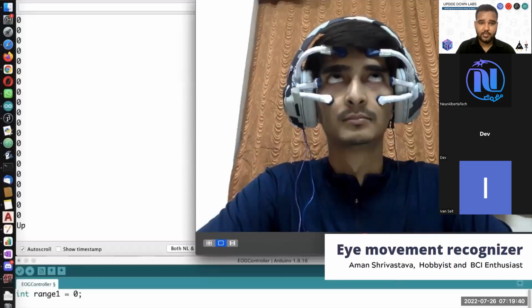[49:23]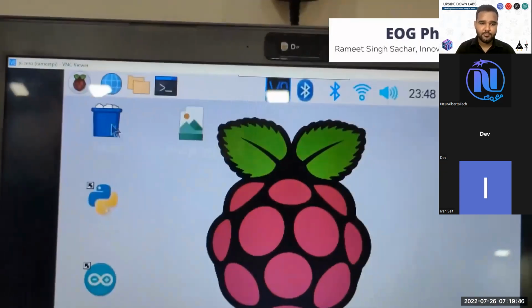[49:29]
This is a very cool example of how you create an advanced human-computer interface or brain-computer interface. Here, Ramit Singh Sachar used BioAmp EXG Pill for eye blink detection. Then he used Raspberry Pi Zero and Raspberry Pi Zero camera with a battery. Whenever he detects eye blinks, he sends signals to the Raspberry Pi Zero to capture an image. And whenever an image is captured, the image will be sent to your laptop.
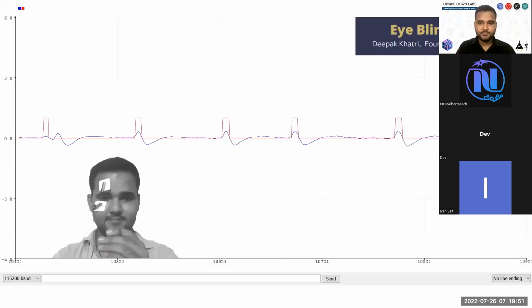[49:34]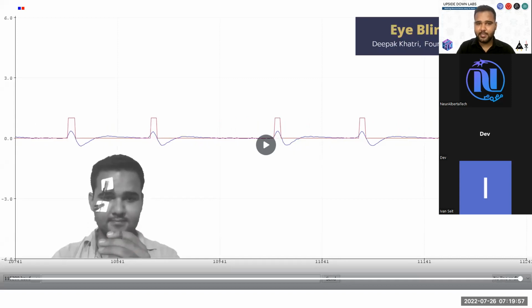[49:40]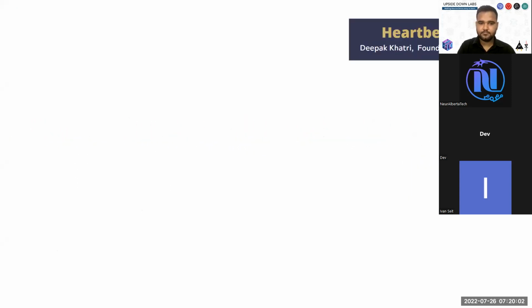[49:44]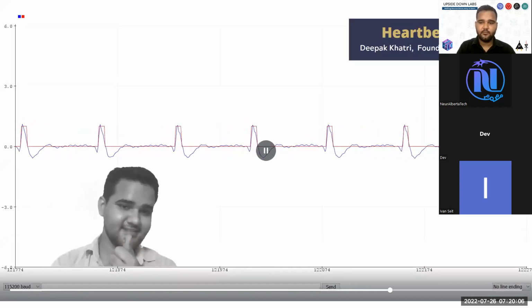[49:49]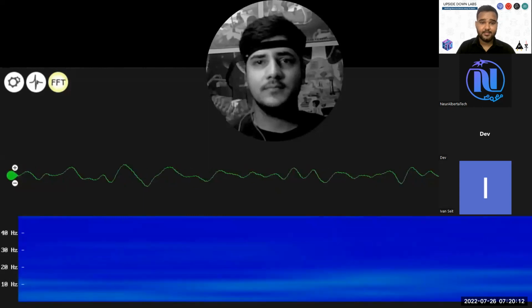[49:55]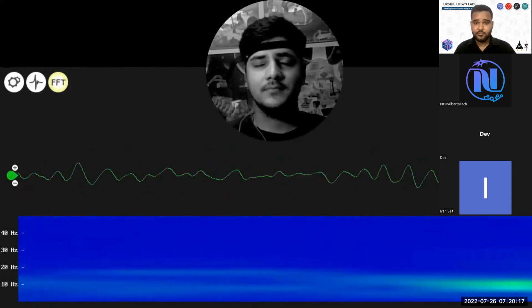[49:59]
This shows the eye blink detection example. Whenever I'm blinking my eye, you can see the signal and the detected peak. This is the heartbeat detection. Whenever a peak is detected, you can count it as a heartbeat. This is our most recent example using BioAmp.
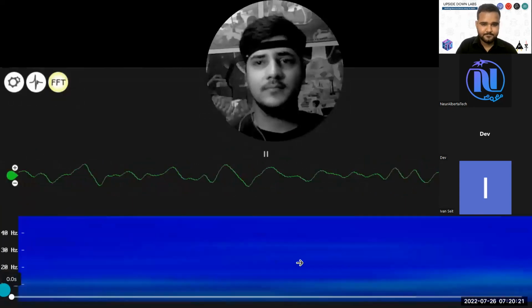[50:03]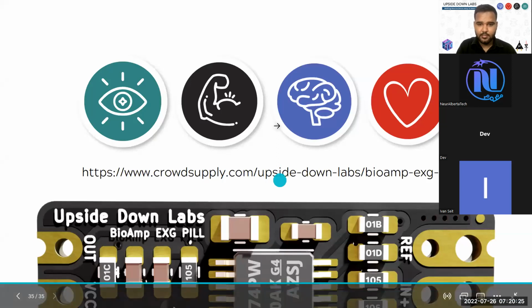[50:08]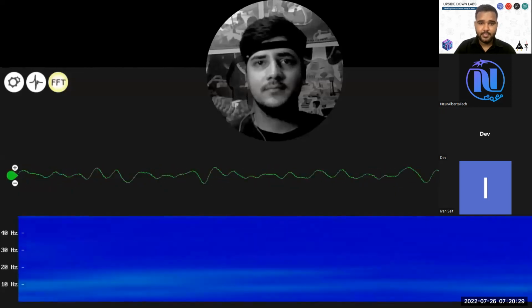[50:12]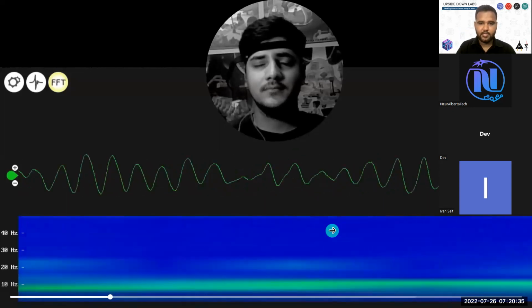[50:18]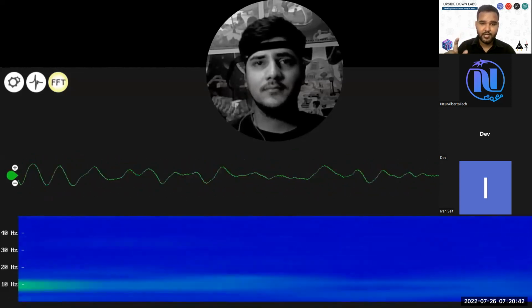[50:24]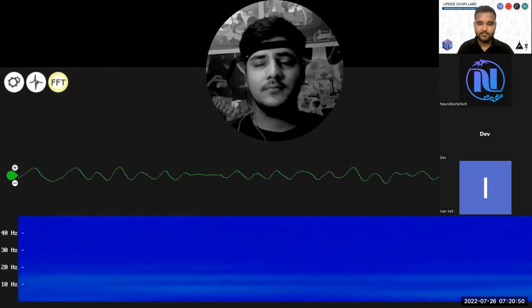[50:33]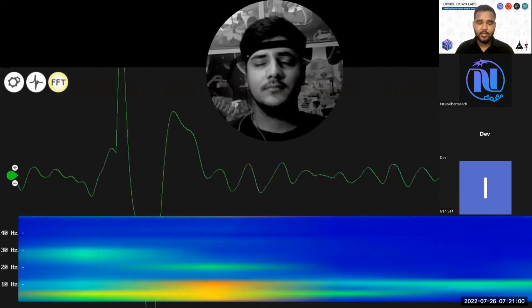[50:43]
Let's start over and try to look. See John Vivek's eyes. When he closes his eyes, you will see a clean 10 hertz wave here on the spectrogram. This shows his alpha waves. We are recording from the visual cortex, and whenever he opens his eyes, the signal goes. So the signal is basically disappeared. Now he has closed his eyes. The signal will slowly come up as a streak or a band of streaks.
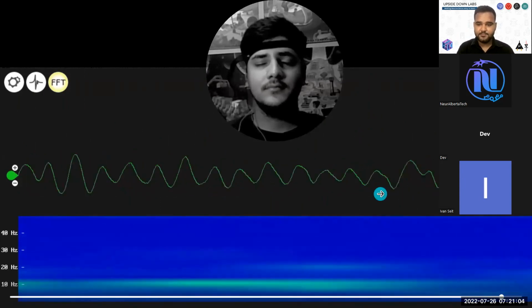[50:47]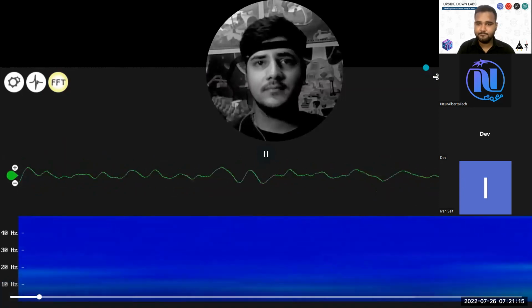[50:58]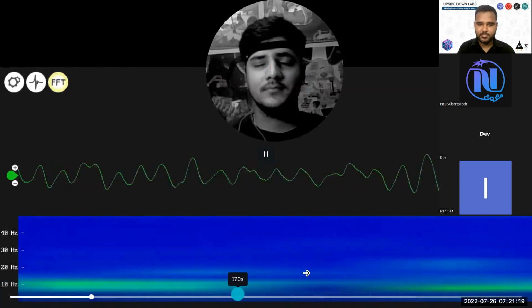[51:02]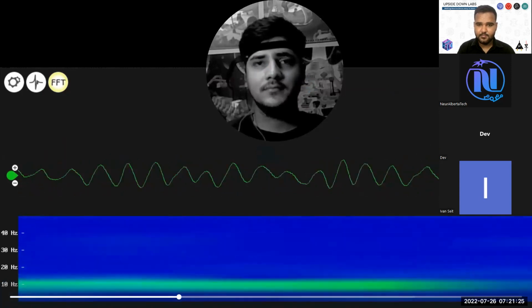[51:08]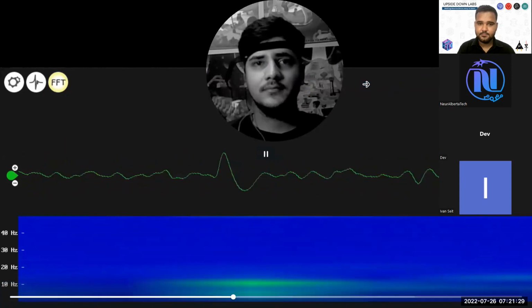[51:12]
I will replay this for you so you can easily take a look at it again. He closes his eyes and you start to see the signal here. He opens his eyes, the signal disappears. So this is a great example of how you can record your brain signals.
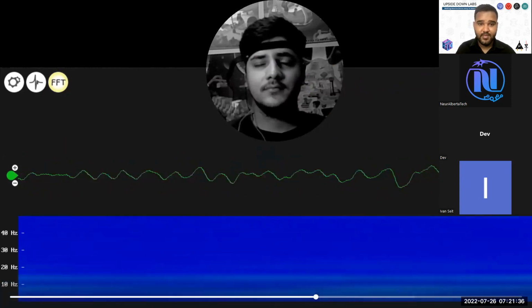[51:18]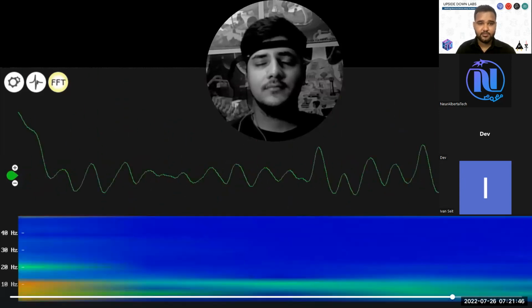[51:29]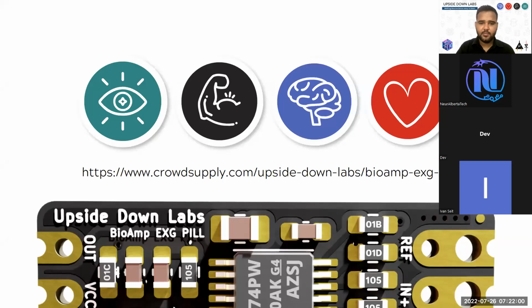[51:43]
And if you are able to record brain signals with this much accuracy, you can easily create any brain-computer interface. You can use these values as focus values or values for basically controlling a fan, a motor, an LED, things like that. So possibilities are endless, and we highly recommend you check out the Upside Down Labs BioAmp project. Everything is open source, everything is open for everyone to use. If possible, support us, and if you have any question, you can send it to contact@upsidedownlabs.tech.
Currently, I am open for any queries you might have. Please go ahead. Or if you have missed some part of the hands-on biopotential amplifier hardware design and signal processing for HCI and BCI applications pre-workshop, do let me know. Whatever time we have, we can revisit and discuss some things.
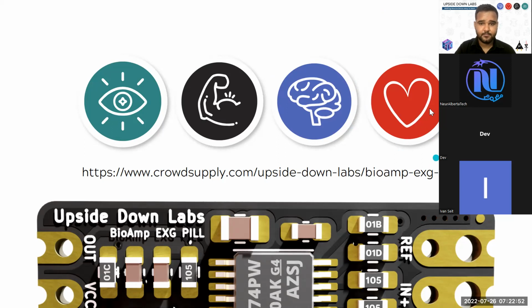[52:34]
Yeah, Dev. Hi, I have a few questions. Yeah, please go ahead. This question is to you, Deepak, and to NeurAlbertaTech. I'm a little concerned because I've never used this BioAmp Pill before. My original thought was to try and use multiple pills because I was trying to get signals out of not only the frontal lobe, but the temporal and occipital lobes also.
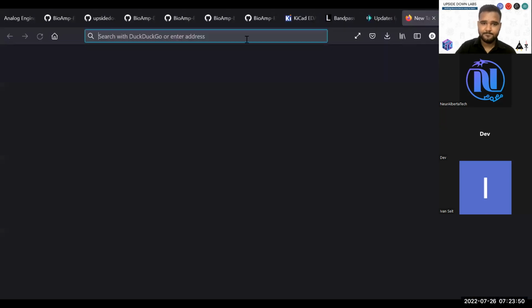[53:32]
Now, I noticed that you showed one last example with visual cortex. What would you suggest? What is the viability and feasibility, without any major hardware work going into this during the period of the hackathon? If I wanted to coordinate three pills and probably an EOG as well, do you think that's feasible in this short duration? Definitely, that is possible.
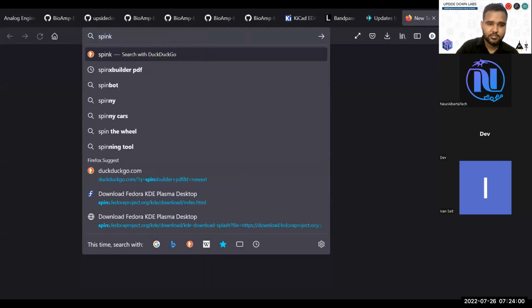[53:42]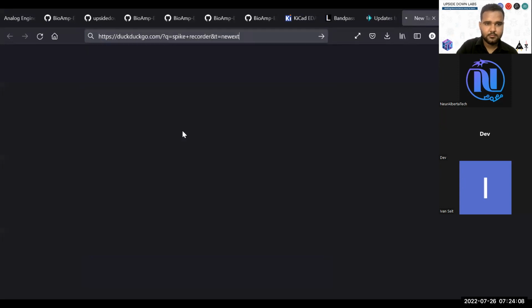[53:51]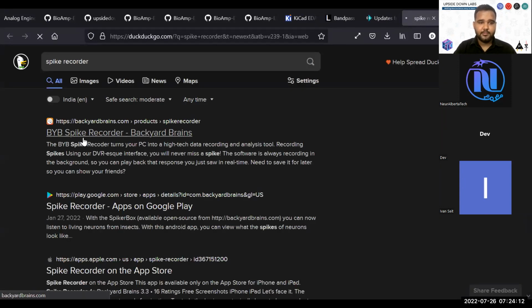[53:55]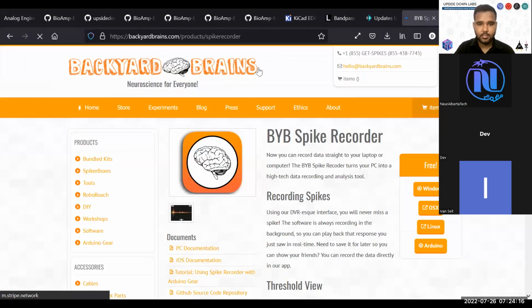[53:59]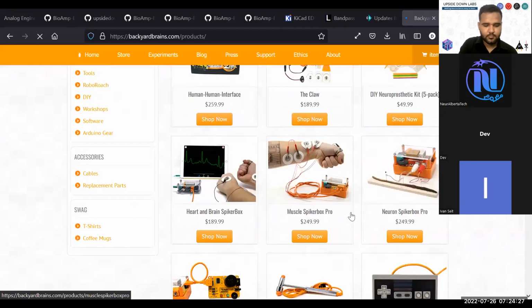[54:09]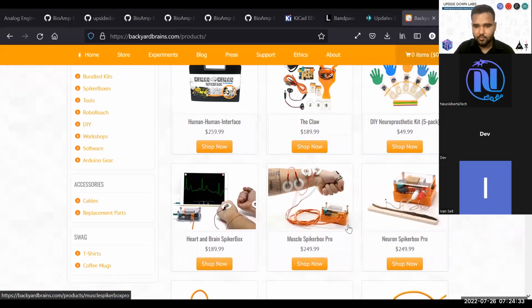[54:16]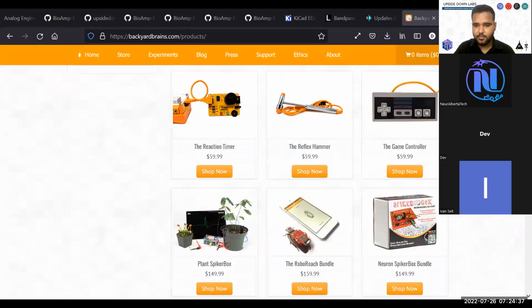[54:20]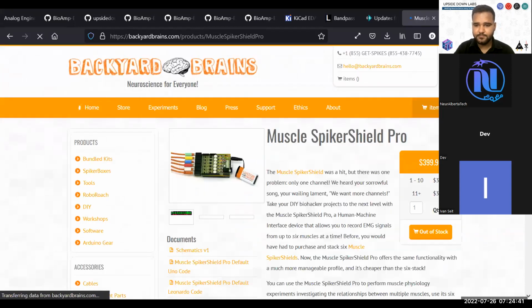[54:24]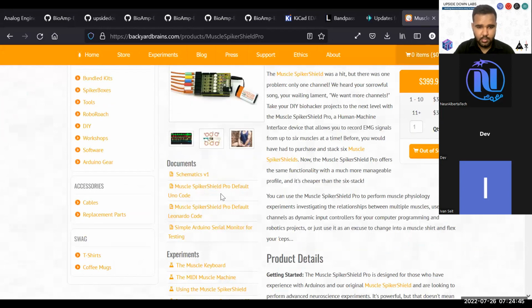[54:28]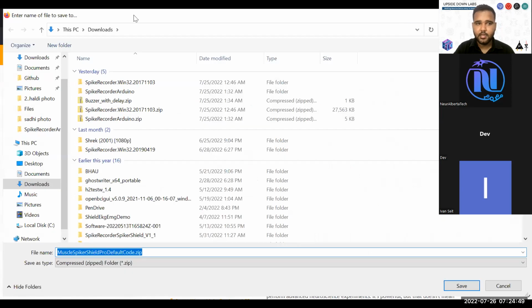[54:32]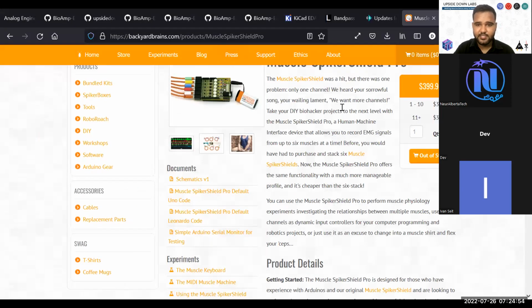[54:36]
So search for Spike Recorder. This is a program created by Backyard Brains. If you go to their store and search for Pro, the SpikerBox 2, they have 6-channel hardware. This is the Muscle SpikerShield Pro. Go to the default code for this and go back. I don't want to store or save this right now, but this is basically a way to convert your Arduino Uno into a 6-channel EXG recording device.
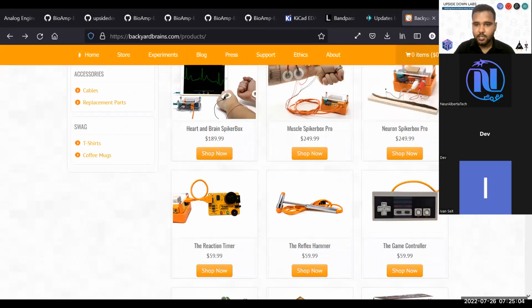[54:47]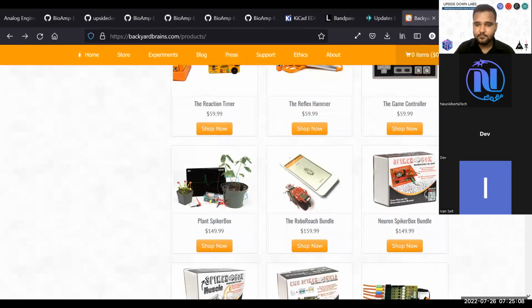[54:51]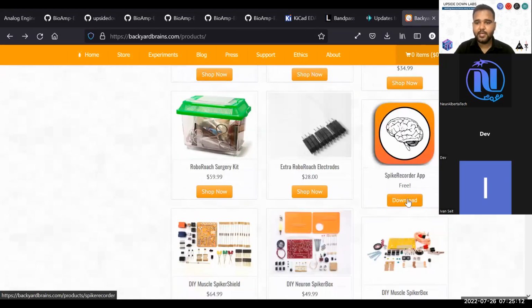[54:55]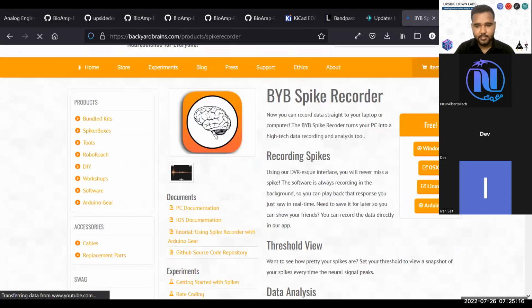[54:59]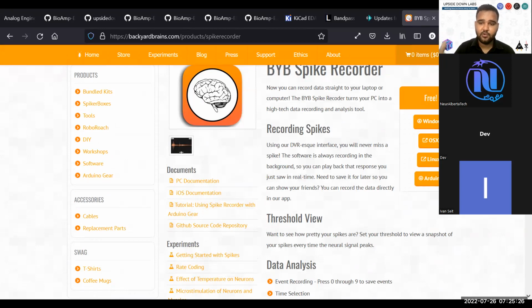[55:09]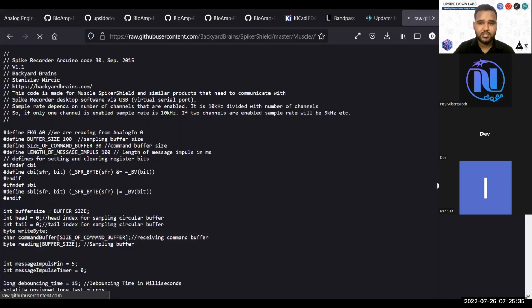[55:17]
The software you download from that place can be used in conjunction with this Spike Recorder application. This can be used on Windows, Linux, and Mac. On Linux, you have to compile it from scratch. I'm not sure about OS X, but on Windows it is directly downloadable, and you have a basic Arduino example. So start off with this, save it as a file with Control S, and start with one channel, record your EEG or your EOG. When you are ready to go, use the 6-channel option.
You can set the channel count there. You don't have to use all 6 channels. If you use a single channel, it will provide you with a sampling frequency option of 10 kilohertz. If you use 2 channels, it will cut down to half, so 5 kilohertz for both channels. If you use 4, 2.5 kilohertz for all 4 channels, you get the point.
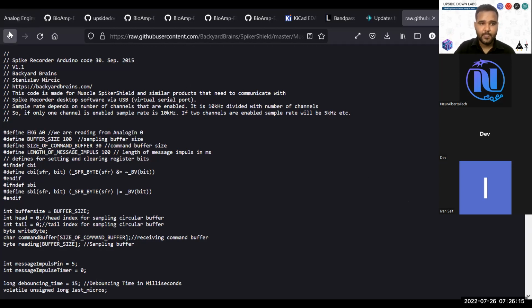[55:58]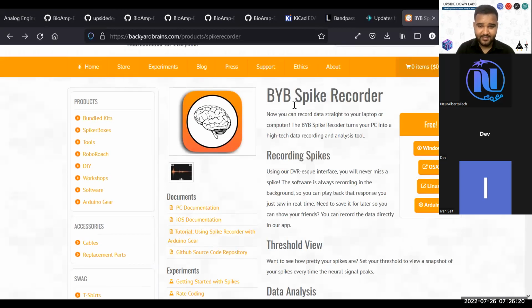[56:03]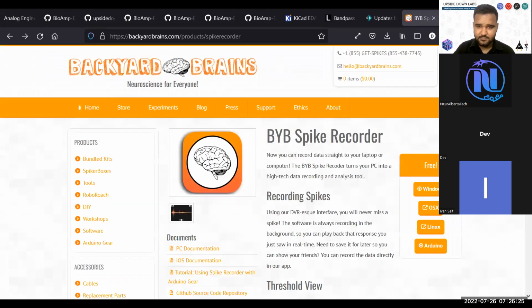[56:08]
Yeah, kind of. In addition to that, we at NeurAlbertaTech are currently working on some template software or boilerplate software to gang together 5 pills and be able to control them through Python. So we're writing the boilerplate code to go from the Arduino Uno to Python code, and that should allow you to use up to 5 pills at the same time and coordinate them.
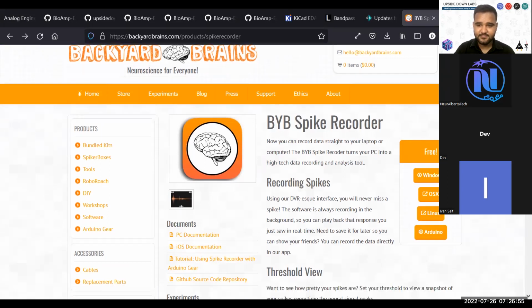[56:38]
So would that mean that I will not need the spike recorder? Correct. And I think I would need quite a bit of help on this. Is there any specific mentor I should follow up with in this regard, or should I talk to Upside Down Labs directly? I am a mentor for NeurAlbertaTech, natHACKS. I have specific timings, but you can reach out to me or any other mentor available to you.
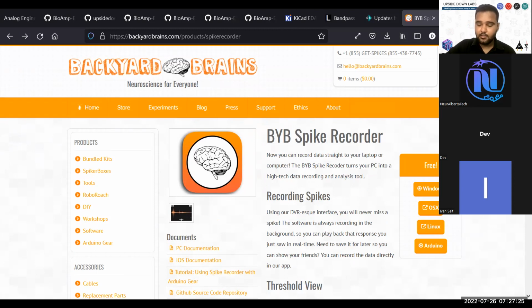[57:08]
Also, if NeurAlbertaTech is creating a 5-channel interface for BioAmp Hardware, do share it as a pull request on the BioAmp Hardware repository. Even if you are going to create something new, do create a pull request on the BioAmp Hardware repository. It helps a lot because a lot of people have put it on watch, and if anything special happens, it helps them and helps us also. Sure, but I'm not sure I'm fully competent to that extent.
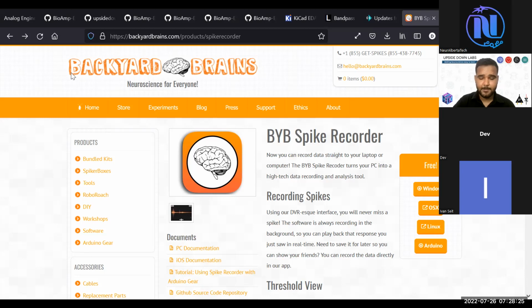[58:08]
A question for NeurAlbertaTech: who should I be contacting regarding this boilerplate, or is it already on the portal? The boilerplate will be up soon. We are doing some final touches on it. It should be up tomorrow, and the code for the pills and getting the signals into Python I'm currently working on right now, so hopefully that'll also be up tomorrow. We also have a workshop on it at some point, and a few of us will be there during the competition and on Discord to help everybody use our boilerplate code to get started immediately.
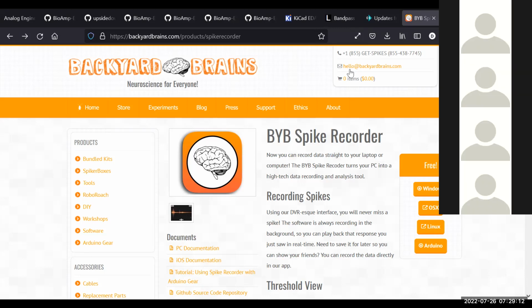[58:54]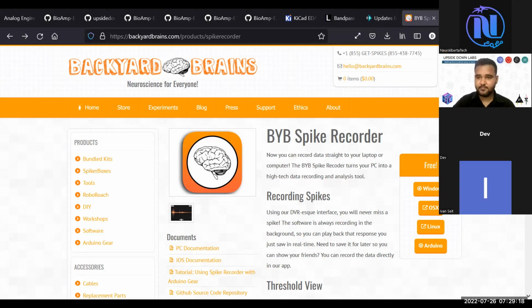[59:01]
Sorry if anybody else has questions. I don't want to take up all the time. I can wait for any other questions because I have a few more questions to ask. Okay, if nobody else has anything, I'll go on with your permission.
The thing is, I'm in Lethbridge right now, and when I go to collect the hardware tomorrow, what should I be asking for? I'm told I'll be getting 5 of these pills, but will I have to requisition separately for the Uno boards and stuff like that, or how does it work? I'm not positive, but I believe if you have asked for some pills, there will be an Uno board supplied with it, if I'm not mistaken. The people at U of L will definitely be able to help you out there. We definitely did acquire quite a few Arduinos for the express purpose of using them with the Upside Down Labs boards.
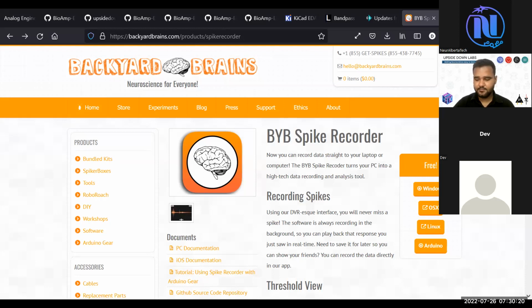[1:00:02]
So if I'm using 5 pills, what would you both suggest? Should I go in for multiple boards, or how does it work? Because I've really never tried using multiple A to D converters on an Uno before. You don't need any additional analog to digital converter. Just use the analog pins of a single Arduino Uno. And if NeurAlberta is creating software that just takes the signal and sends it over UART, then they have a Python script. You can use that only. Yeah, it will be straightforward.
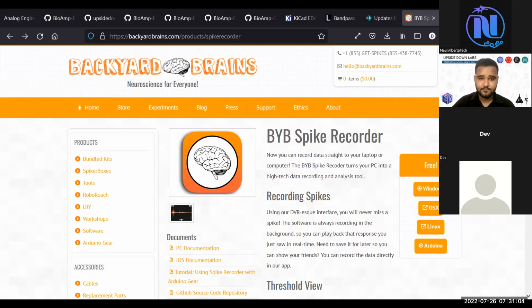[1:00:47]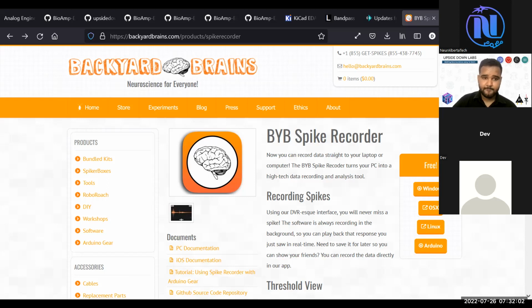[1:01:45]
The question is, I'd like to synchronize this, like Deepak was pointing out earlier. He did mention the spiker box. You would be reducing the bandwidth if you have multiple channels. I was wondering if I could record these 5 channels, maybe including the EOG, simultaneously. Is that something feasible at all, is what I'm wondering. Yeah, that definitely should be feasible.
I think the only thing that you might run into is you may need to lower the sampling rate, maybe, but I don't think that you would. But that would be the only issue that I can think of off the top of my head. Actually, you are right. Okay.
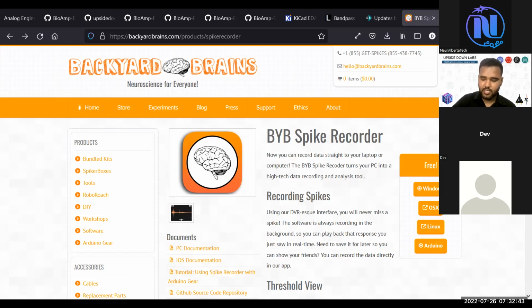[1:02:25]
You will have anybody using 6 or 5, even 5 BioAmp pills with Arduino Uno, with basic Arduino code. You are not fiddling with the bits. What Backyard Brains has done, they are setting everything using registers, and you're able to get very fine-tuned timer controlled output to your spike recorder software.
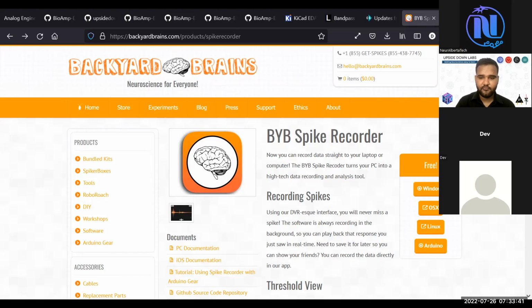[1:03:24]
when your signal is being recorded, your filters will not work, and that is something you have to keep in mind when you use more than one biopotential amplifier. Keep the sampling rate to be around 250 for your EEG and EOG application. You will be good to go with 250. If you go something like 1 kilohertz with basic Arduino code, you will find a lot of noise in the output after filtration. It will be clean before filtration, but after filtering, it might be noisy because your timing is not correct. So timing is very crucial if you are applying your software controlled band pass filters.
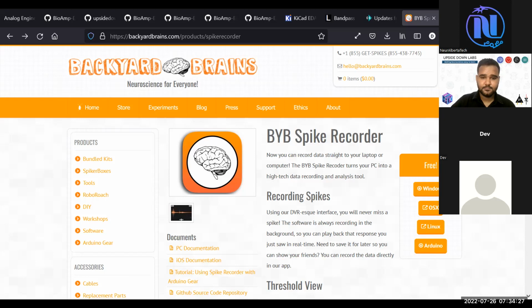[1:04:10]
Also, NeurAlberta, if you really need any help from Upside Labs, we'll be glad to do that, and we can set up a guide or something like that on the repository, and we can provide the information to other students who might be dealing with the same problem.
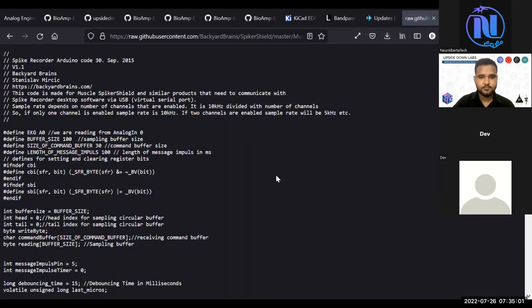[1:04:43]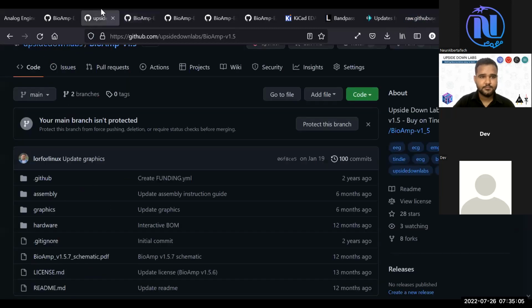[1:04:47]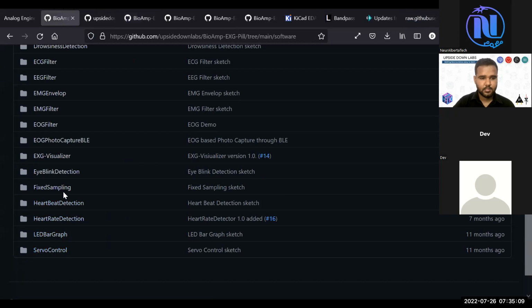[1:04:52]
Definitely, yeah. I believe we currently are not working with the registers, and so I believe the timing will be a bit of an issue. I'm not positive on how much of an issue it'll be for which tasks, because we haven't had enough time to test it out, but we currently won't be doing that.
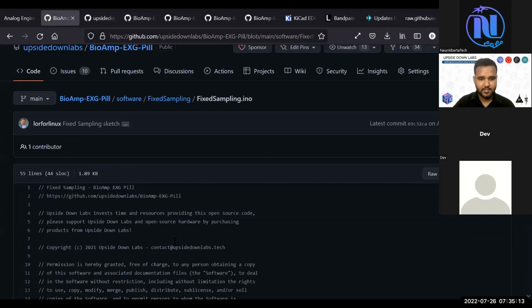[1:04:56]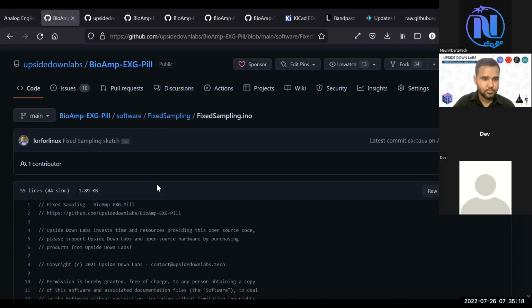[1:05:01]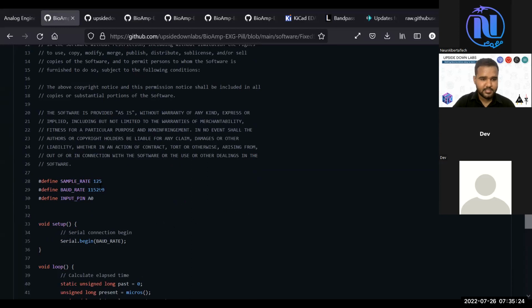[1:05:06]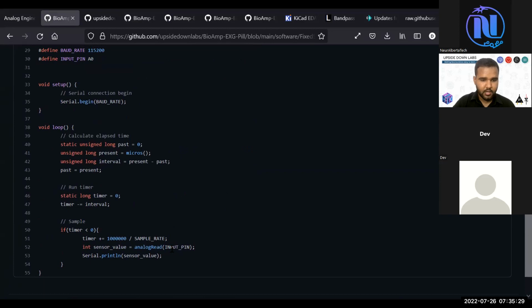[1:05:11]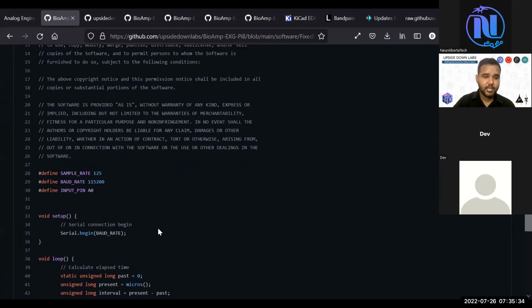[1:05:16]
Agree. So what I really recommend you to do is use this fixed sampling example. In this, you just change the sampling rate to 250, and you will record input signal from all the 6 input pins, and you just send the signal on the UART. Then you can use any Python program to get the signals as comma separated values, CSV, and you then split the values and do your filtering there.
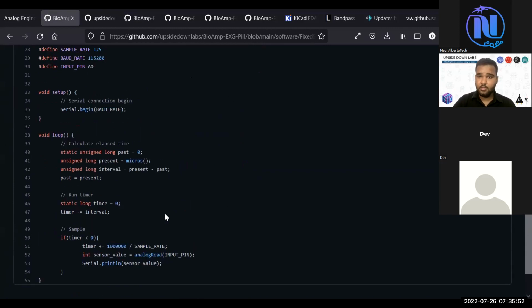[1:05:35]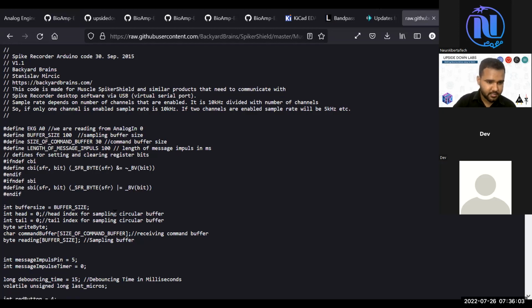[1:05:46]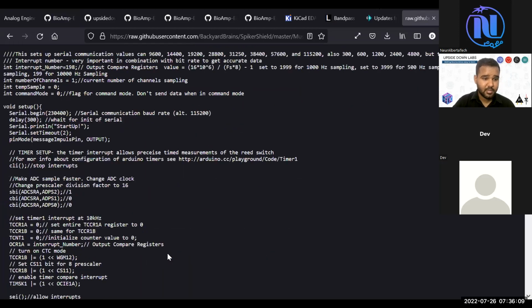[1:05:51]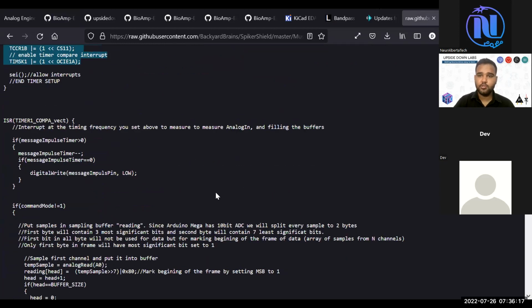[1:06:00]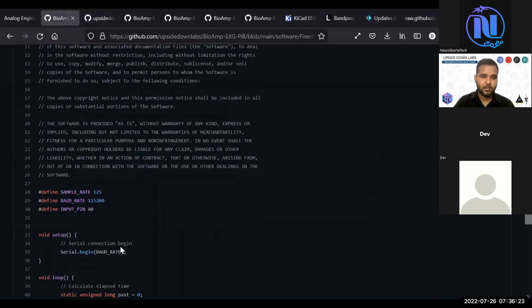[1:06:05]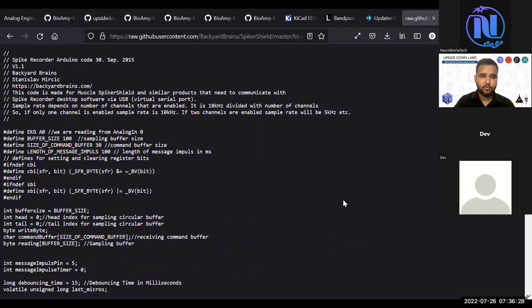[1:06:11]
Other option I was thinking, you use what Backyard Brains has provided for multiple channel recording, and if you see, they have used registers for everything. So this is very optimized even to the ADC bits and everything. So both options are good. If you are just recording at 250 hertz, this will be a good option because it saves a lot of time. And we are currently trying to debug this to be used with other boards like ESP32.
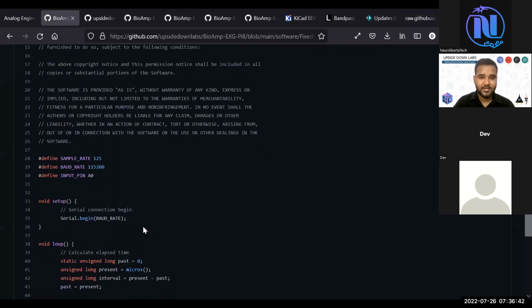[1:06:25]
ESP32 is much more powerful, as in it has a very high operational frequency. So whatever we are going to do with the timing functions will be obsolete, because the CPU frequency is so high, it doesn't matter if you are going to use registers.
Yep. And if you have a Raspberry Pi Pico, use that with some resistors. Or for EOG and EEG, we tried without resistors, as in your voltage divider resistors to convert the 5 volt signal to 3.3 volt. Without those resistors, it also works great, and you get a 12-bit like resolution. Although the ADC of Raspberry Pi Pico by default is a bit noisy, you have to check the data sheet to connect one pin, the analog reference pin, to I think VCC to make it better.
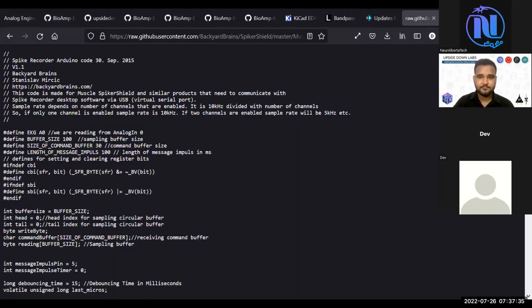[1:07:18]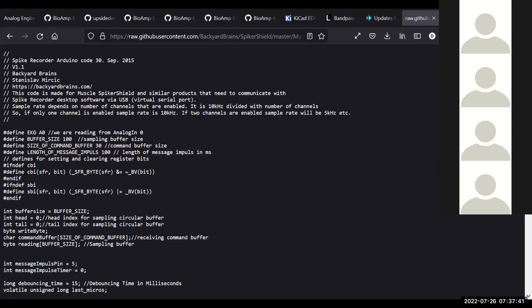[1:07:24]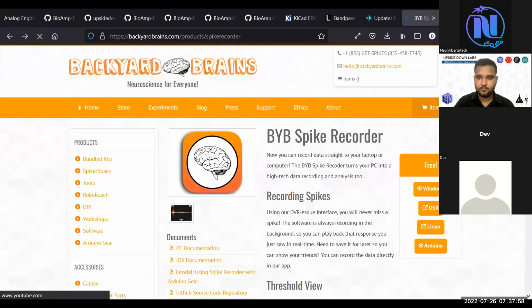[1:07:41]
Okay, thanks a lot. Just if I can ask 2 more questions quickly. One is, if I need to capture on an Android for some outdoor activities, let's say, you mentioned there was a device where the mobile would take snapshots or pictures of whatever this person was looking at. What's the interface between the pill and the Android?
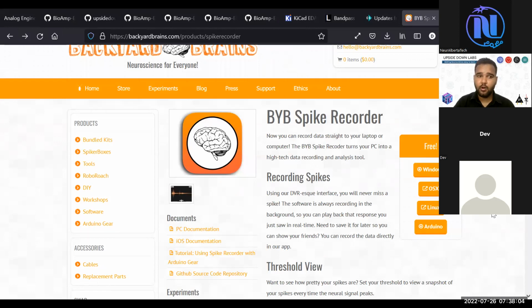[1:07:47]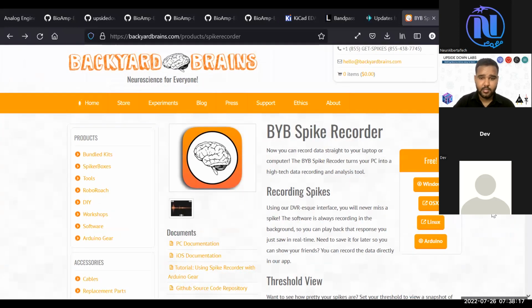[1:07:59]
So if you want to record from a single BioAmp pill, there is an option to use the microphone input of your mobile phone, and the spike recorder software is also available on your, sorry, on your iOS devices, basically Apple Store, and on Play Store. You can download that.
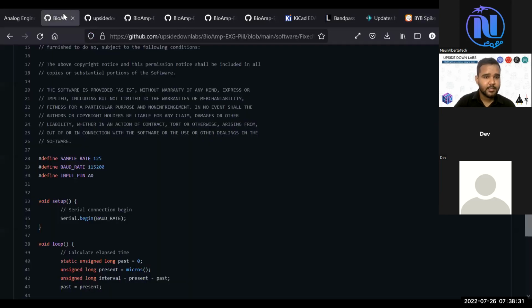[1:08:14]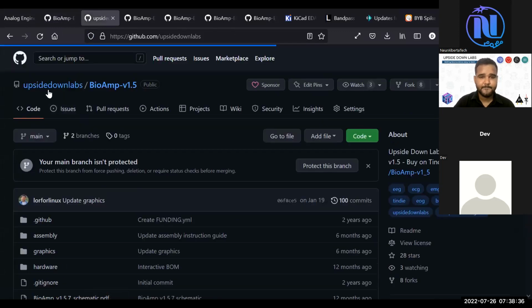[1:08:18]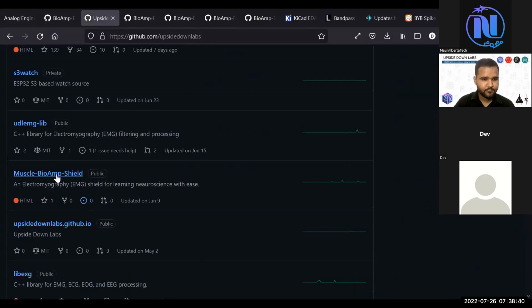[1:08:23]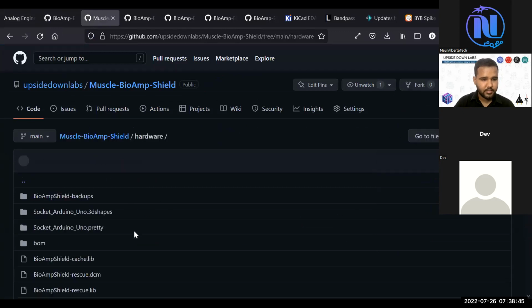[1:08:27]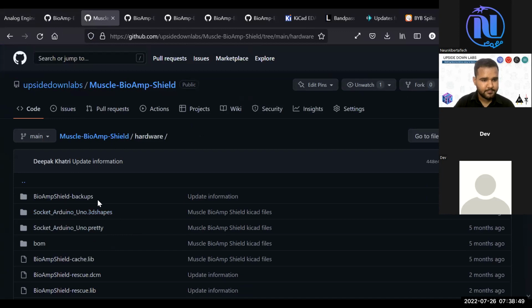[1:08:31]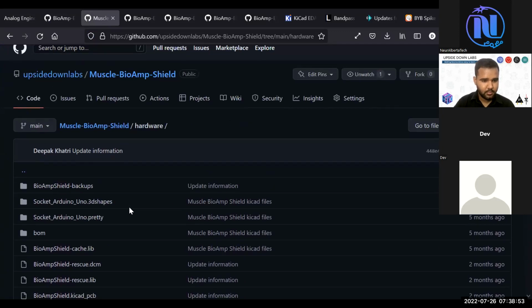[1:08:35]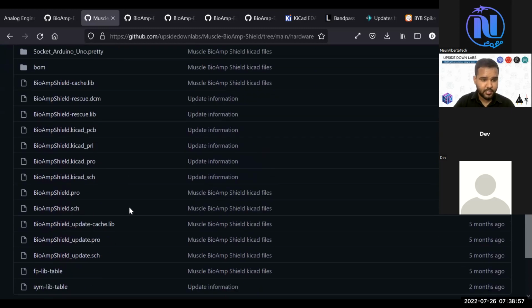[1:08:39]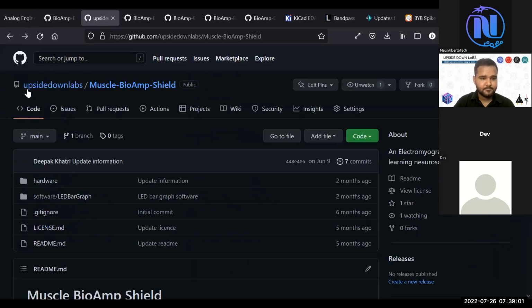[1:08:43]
There should be a PDF in here. I think I will have to look for it and include it in the repository. Basically, you have the option to create a microphone-to-BioAmp chip interface, and you can record from any signal, like you can record from plants. Your human signals can also be recorded using that.
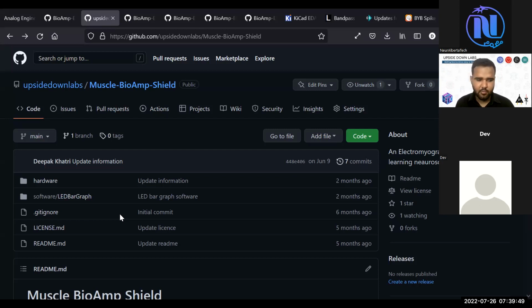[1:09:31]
Okay, thanks. I'll end it off with one final question, and I'd like you to comment on this. What about using open source EEGLAB software? Any thoughts on that? Possible, yeah. One scientist from Russia is using EEG related open source software, and he provided me with the Arduino code. Contact me if you want to use any open source software specifically for EEG. I will also provide the software to NeurAlbertaTech if somebody else wants it. Keep in touch.
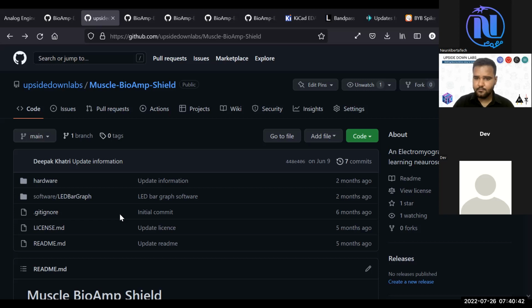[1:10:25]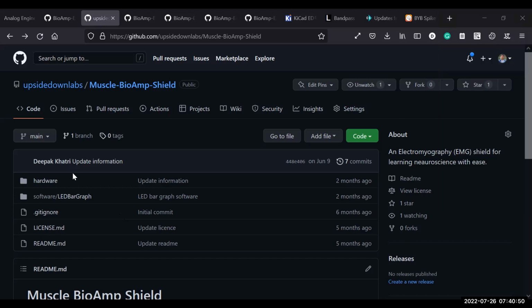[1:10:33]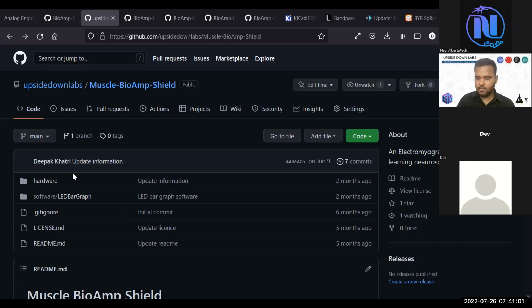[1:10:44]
The software that we've been using at NeuraAlberta is called BrainFlow. It's a library. One of our mentors is the maintainer of the BrainFlow library, so that's also a good resource. Can we use BrainFlow with Arduino? I am not positive. I think it takes a little bit of interface code to do it with Arduino. Once it's translated, I think you can do a good bit of work with BrainFlow after converting over to an appropriate type.
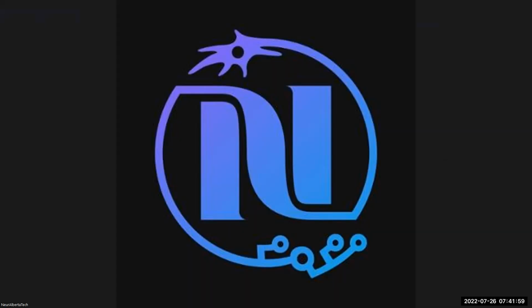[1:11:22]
Let me check what that scientist is using. I think it is BrainFlow. It is BrainBay, and I have a basic Arduino example code for that. So if you want to use BrainBay, you can use that with BioAmp. Yes, Deepak.
Your boards are quite small, and it appears that making sure they're small is quite important to you and your company. I was wondering, when you were designing the boards, did you end up having to cut off certain functionality that you wanted to add in, but it would have made the board larger or more complex than you wanted it to be?
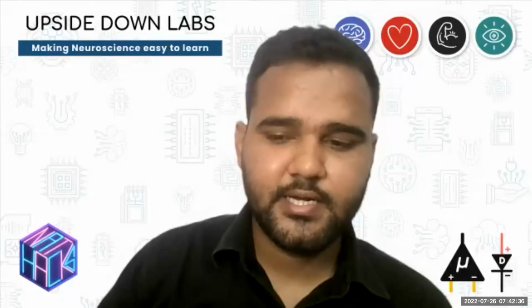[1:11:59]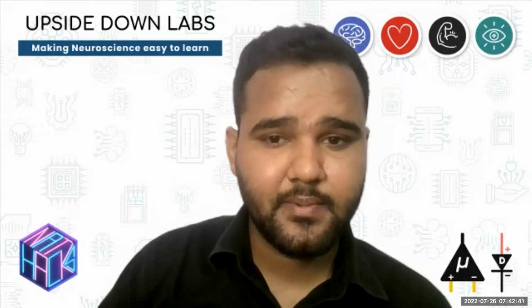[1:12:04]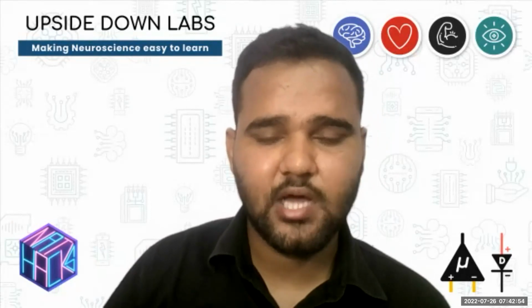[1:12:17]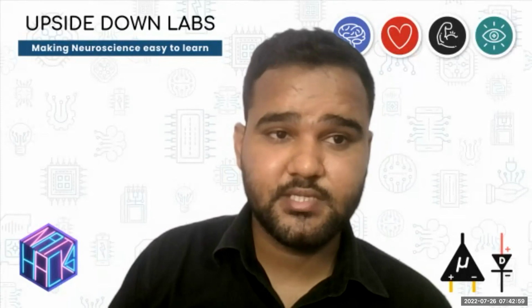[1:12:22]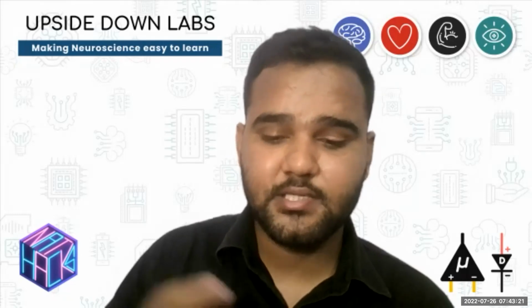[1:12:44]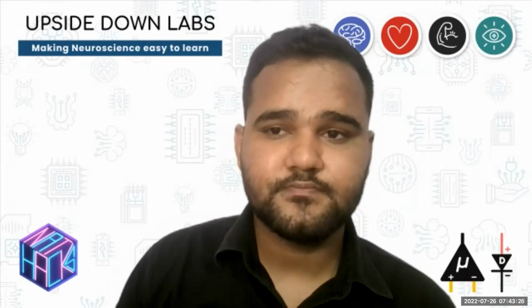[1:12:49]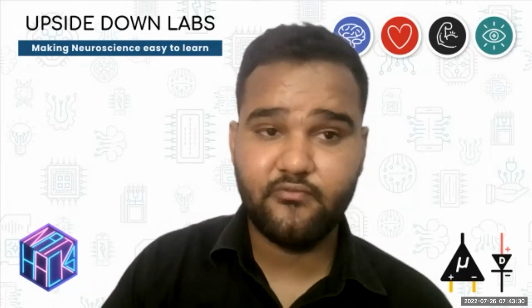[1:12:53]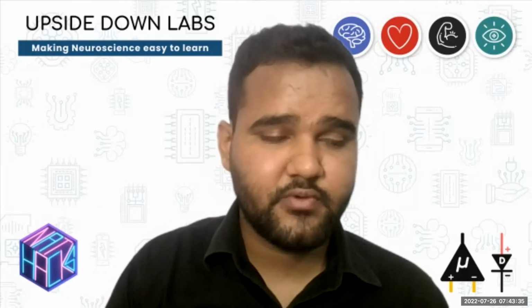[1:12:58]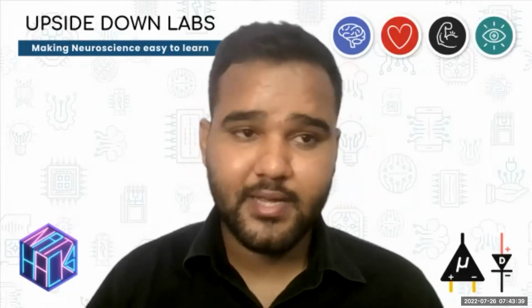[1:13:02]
One functionality which we removed is kind of debatable. We removed the input protection diodes. Those are not necessarily needed for our specific application, for how we are treating the device. Other than that, not much is removed. If you are going to use a specific biopotential scenario, like ECG, we usually tend to go with active DRL, driven right leg, which takes the midpoint from a three operational amplifier gain resistor and supplies it to a buffer with a reference input. It tends to provide better results, but what we are getting with BioAmp is far better than what we can achieve with the DRL. So we are not compromising with the signals at all.
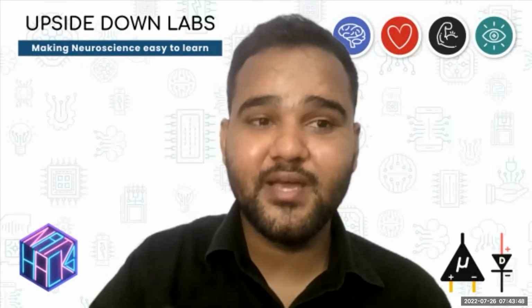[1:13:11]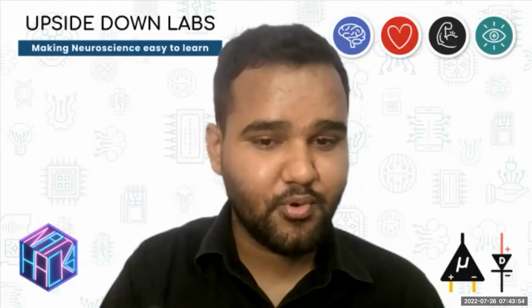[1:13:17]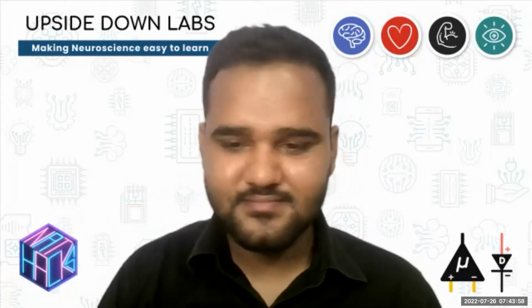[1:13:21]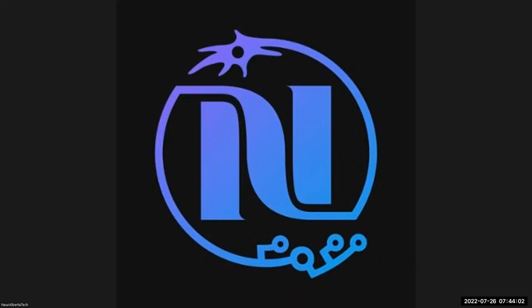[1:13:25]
And you are saying that BioAmp is quite small. Actually, we made it a bit bigger so that it can be handled easily. We were thinking of shrinking it more, but we stopped at a point. Yeah, that's interesting. Thank you.
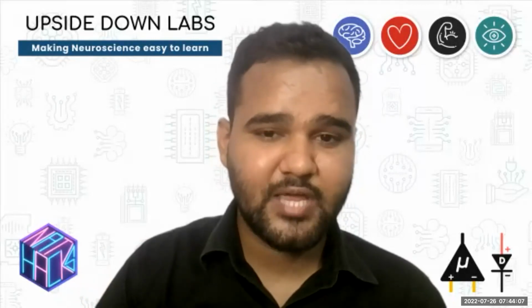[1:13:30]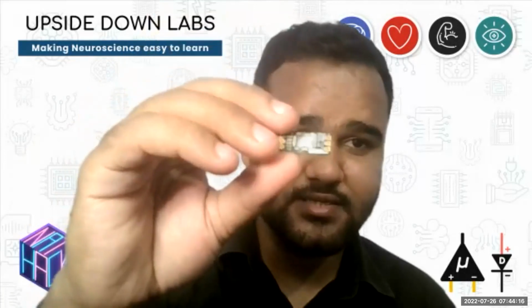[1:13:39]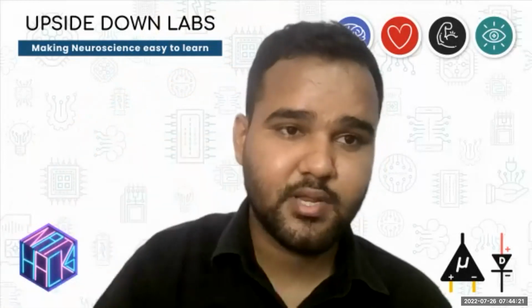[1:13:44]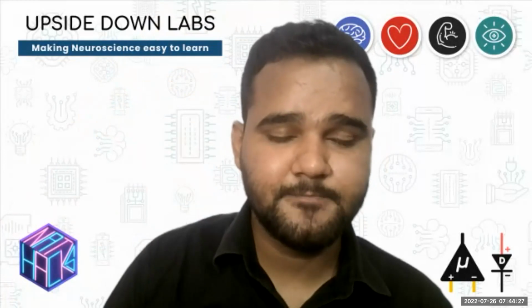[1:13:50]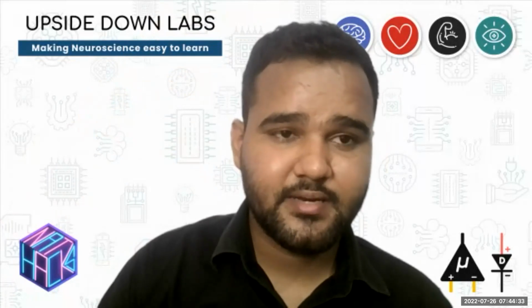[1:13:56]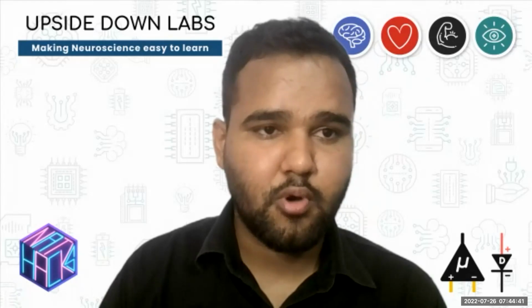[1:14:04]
We are going to release a new hardware which is based on BioAmp. It is a proprietary hardware for our different company. It is going to be very minute. We are going to use 0402 resistors and basically take half of the BioAmp or even smaller than that. It will be a module for EMG signals that can be included in prosthetic arm controllers. You just put it as a chip and it will have only 6 pins. It will simplify the design of EMG controlled augmentation devices, prosthetic hands, game controllers, and things like that.
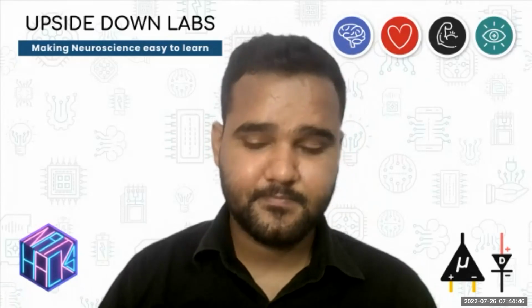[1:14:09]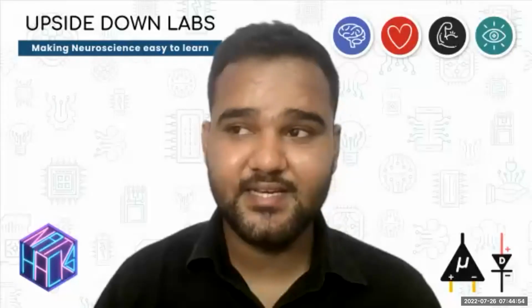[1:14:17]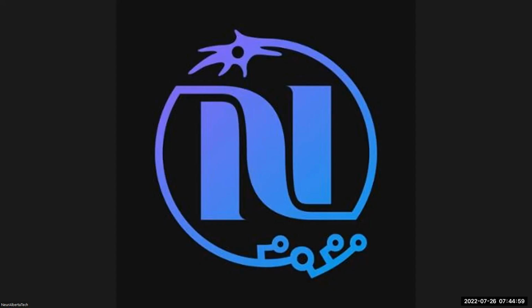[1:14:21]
Cool. Well, I'll have to definitely keep my eye out for that. It sounds like it would be fun to play around with. Definitely, we'll send some samples to NeurAlberta as well. Awesome.
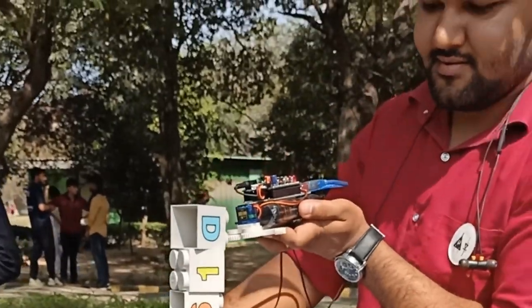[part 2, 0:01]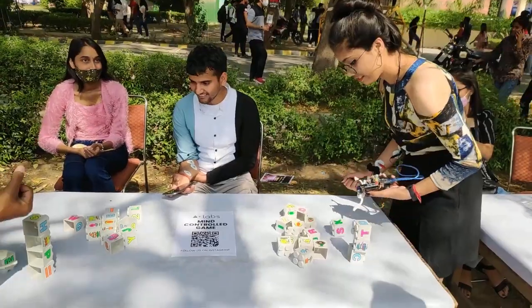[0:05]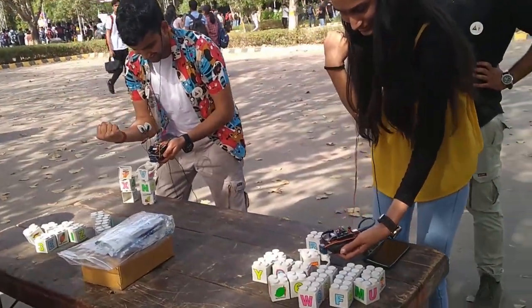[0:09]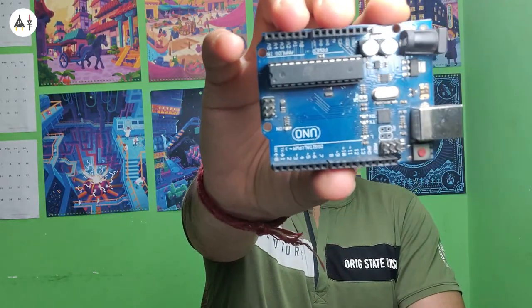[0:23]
The video that you just saw is a muscle control game. This is what we have used in that. Let's see what are its components. The first one is this. You must have used or at least seen this, right?
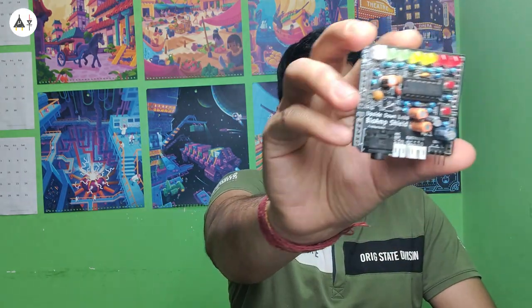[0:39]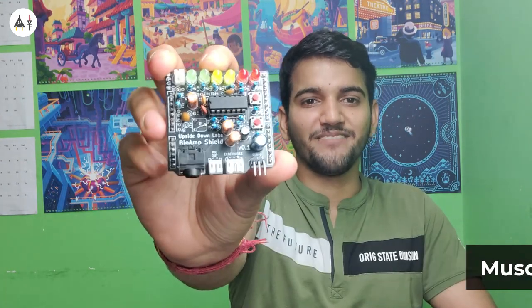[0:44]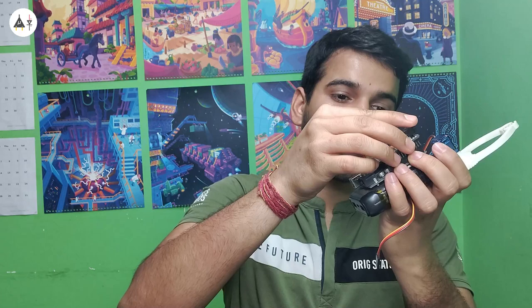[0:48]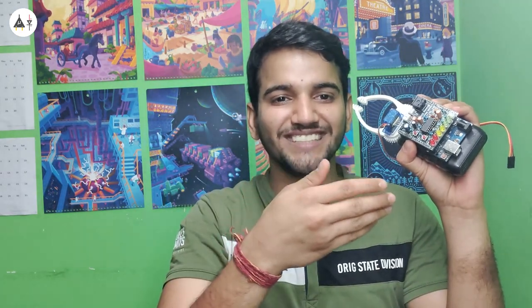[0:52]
That's Arduino Uno, an open source microcontroller board that can be used to make amazing projects. It is beginner friendly and most people start their journey of learning electronics or even neuroscience using this. And that's why we have made Muscle BioAmp Shield, an open source board that can record EMG signals easily. The best part is that it can be stacked on top of Arduino, so that even a beginner can explore neuroscience using this.
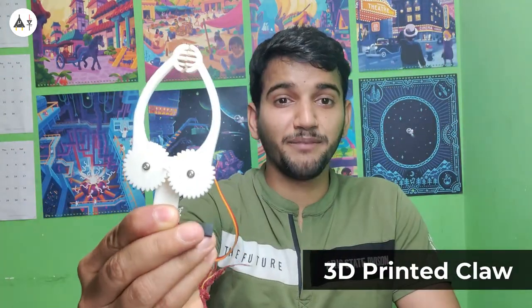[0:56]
Then we have this claw here. It is designed and 3D printed by Padmalaya Rawal, who was the winner of Upside Down Labs Challenge 2021, our flagship competition, and he interned with us as well for 2 months. And on the back of the Arduino, we have a small power bank here to give power to this device. It wasn't working with a 9-volt battery, so we had to use a power bank here.
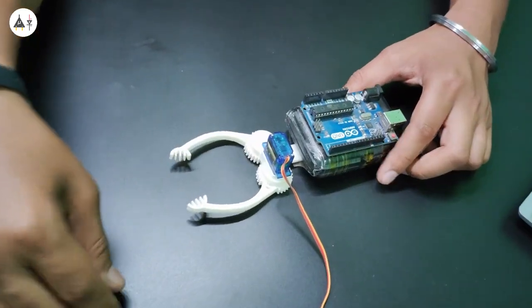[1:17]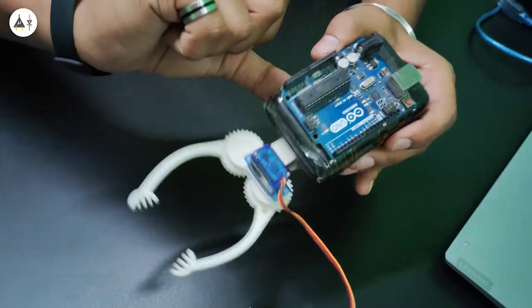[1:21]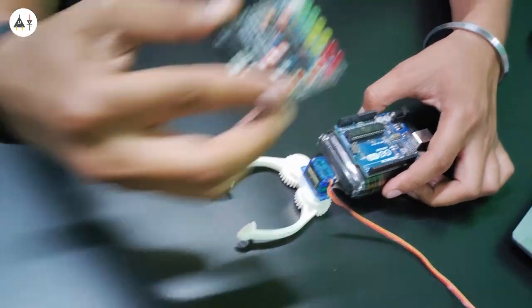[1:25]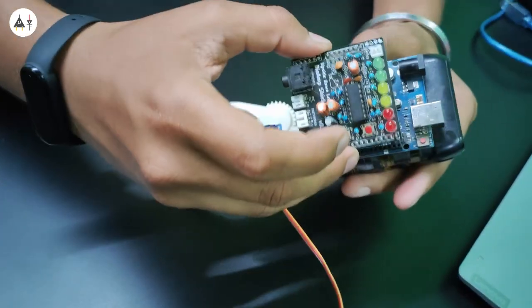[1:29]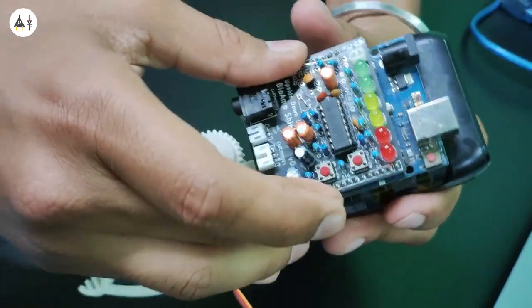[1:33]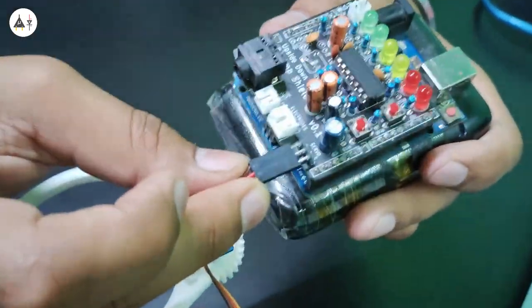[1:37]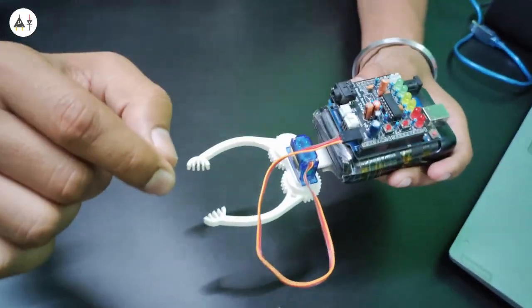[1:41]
Now let's see the live demo. Now let's see how we are connecting everything. So this is the servo claw, this one is Arduino Uno, and this is our power bank. So now let's stack Muscle BioAmp Shield on top of Arduino Uno like this. Now let's connect the servo claw with this connector on Muscle BioAmp Shield.
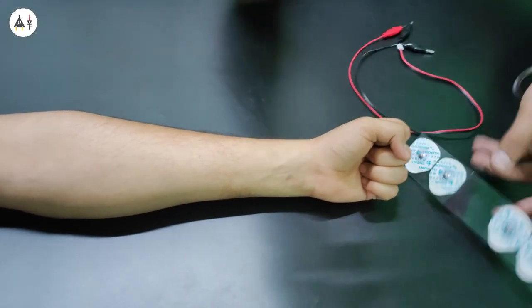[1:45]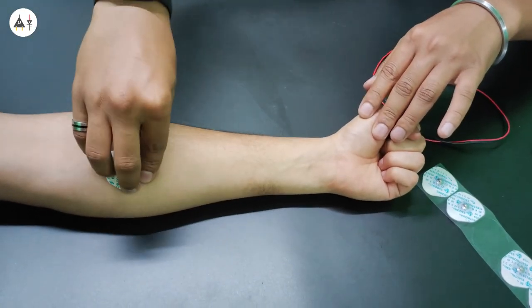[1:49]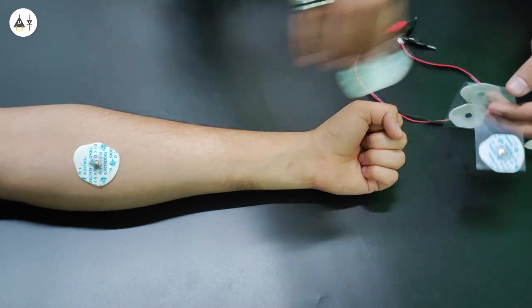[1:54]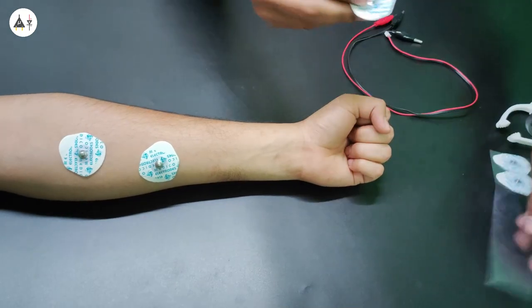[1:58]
Now this is connected. These are the electrode patches. Now I will place it on the ulnar nerve to get the best results. This one is for positive. This is for negative. And here is the reference electrode.
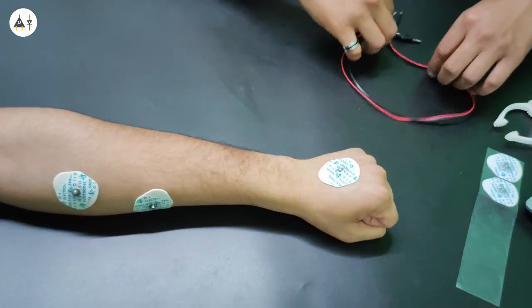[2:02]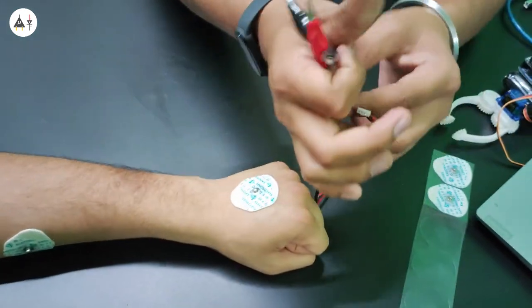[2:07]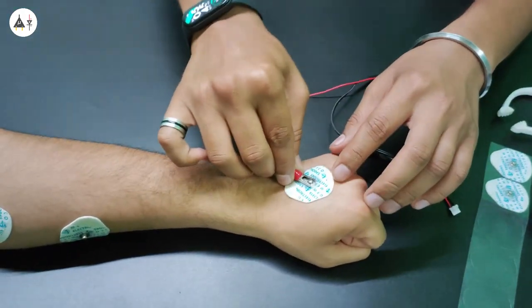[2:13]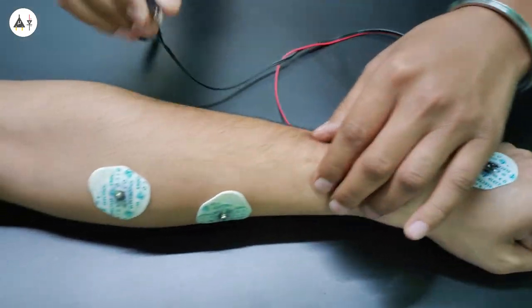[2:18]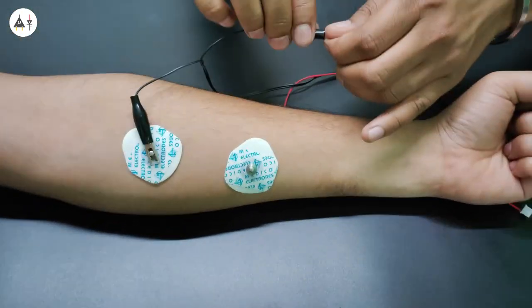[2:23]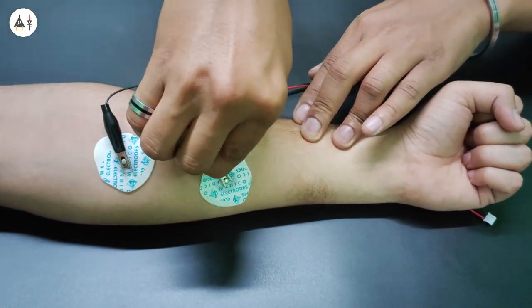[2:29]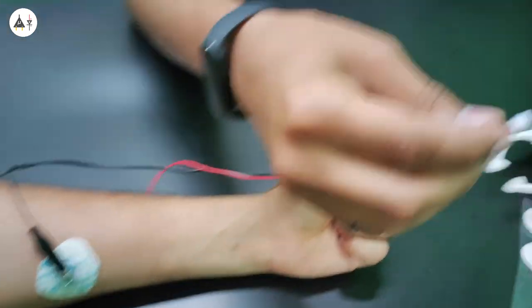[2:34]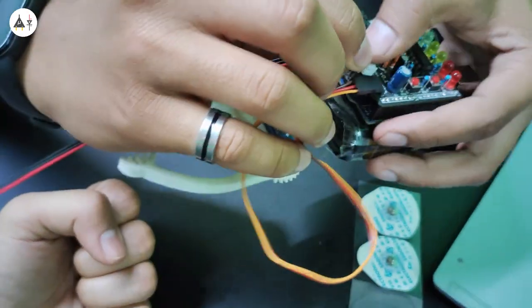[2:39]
This is our BioAmp cable. This can be connected on the Muscle BioAmp Shield. And these are the alligator clips. The red one is for the reference electrode, here. This one is for positive. And this is for negative. This connector can be connected here on the BioAmp Muscle Shield.
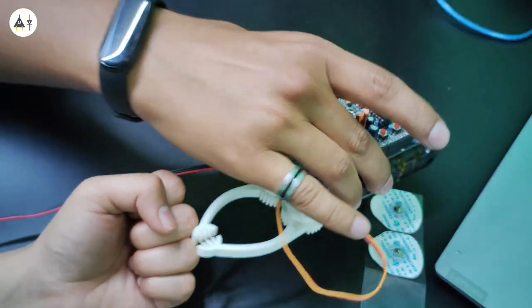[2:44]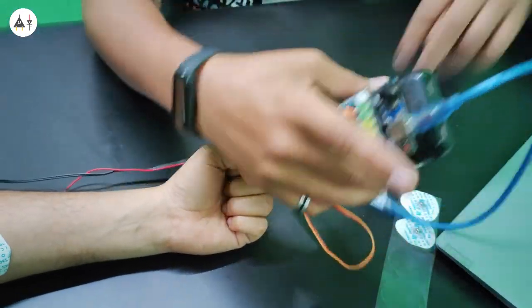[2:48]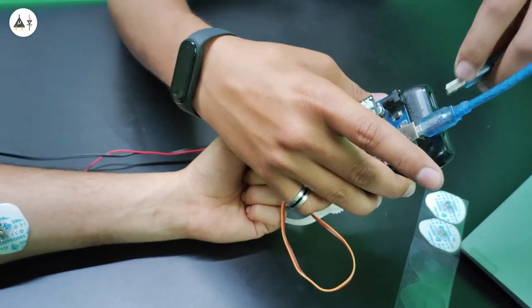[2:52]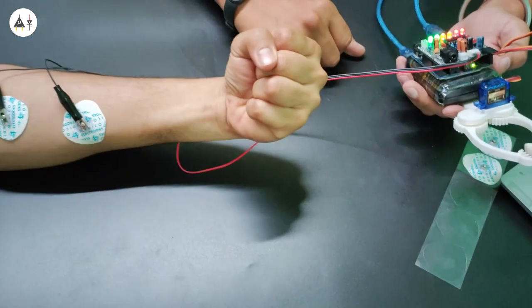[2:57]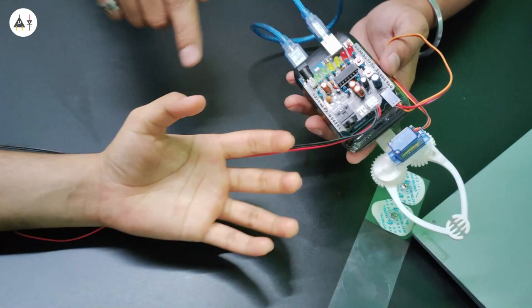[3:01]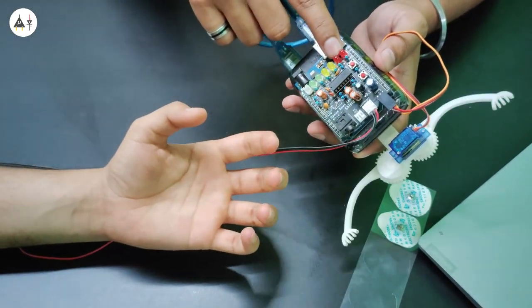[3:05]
Now let's give some power to the Arduino Uno through this power bank. And it's good to go. You can see the visual feedback over here. So when he is flexing the muscles, these LEDs are rising, right?
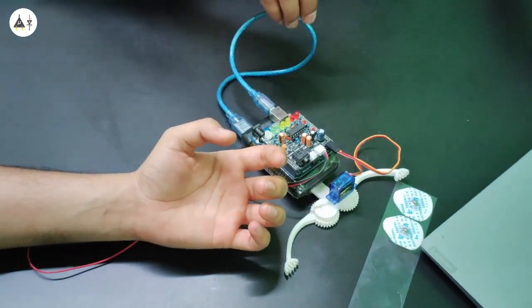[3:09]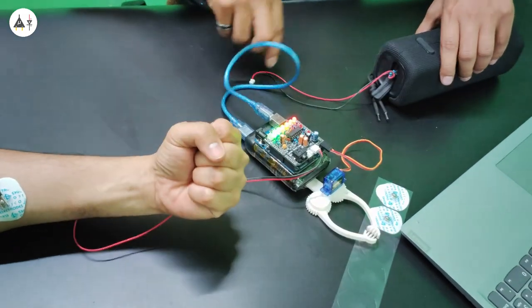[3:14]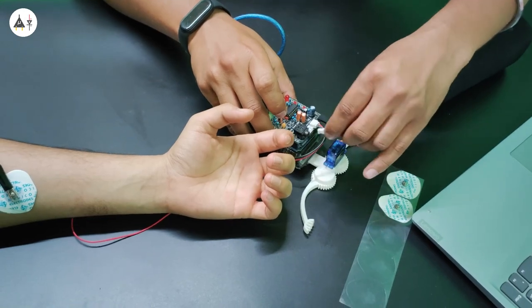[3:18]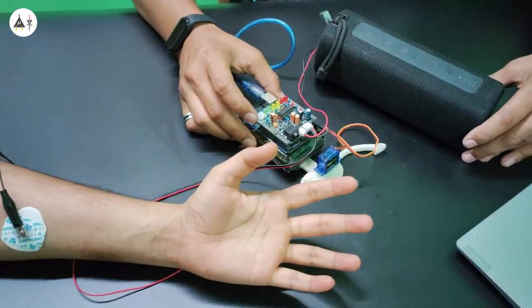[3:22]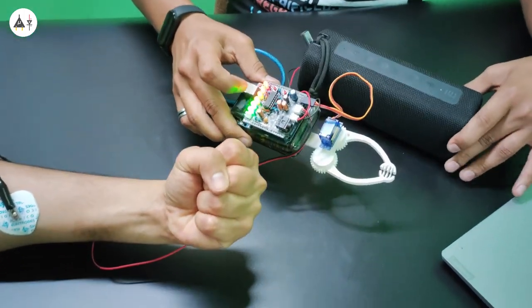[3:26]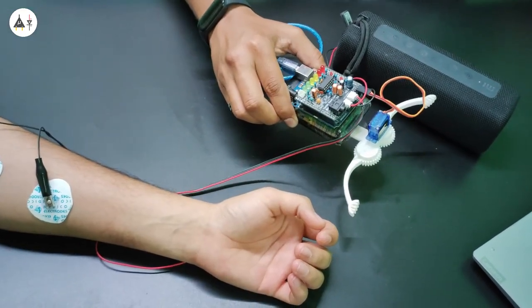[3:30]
But this is not all. We can have audio feedback as well through this speaker. So let's connect it to the Muscle BioAmp Shield. So now when he's flexing his muscles, here is the visual feedback and this is the audio feedback. Isn't it amazing that we used this to organize a muscle controlled game in Netaji Subhash University of Technology, Dwarka?
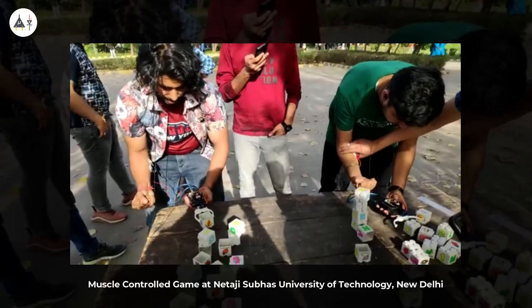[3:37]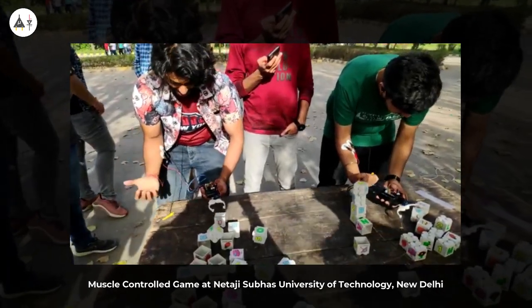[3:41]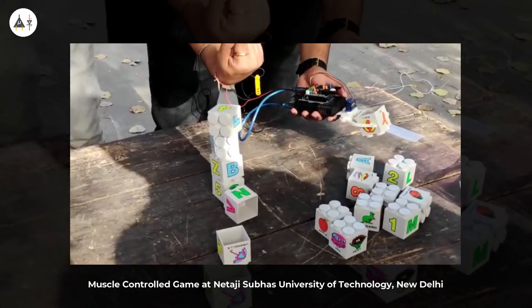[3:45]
See, the students were competing with each other and they had to make 4 pillars of 4 blocks each under 3 minutes. Whosoever makes more blocks is the winner over here. It was a fun event and students were actually interested to know how this works, what is the concept behind it. So let's see what is the concept now.
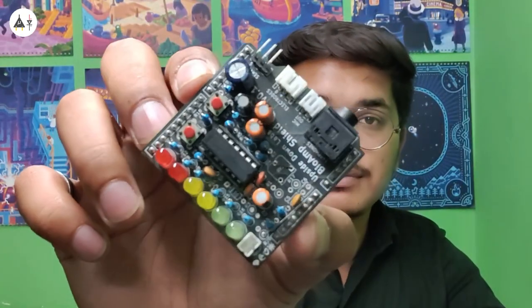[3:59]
So we were recording EMG signals using Muscle BioAmp Shield. EMG signals are the recording of action potentials that are generated within our muscles. But what are these action potentials? Whenever we flex our muscles, there is contraction and relaxation due to which there is the migration of charges or ions within our body fluids, which in turn produces these action potentials. We also call them biopotential signals.
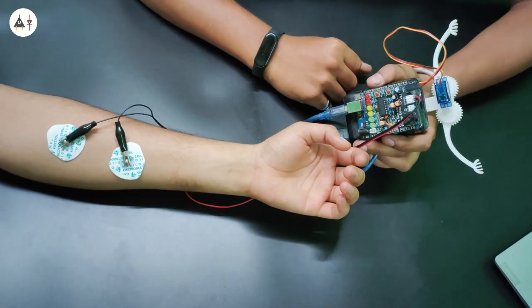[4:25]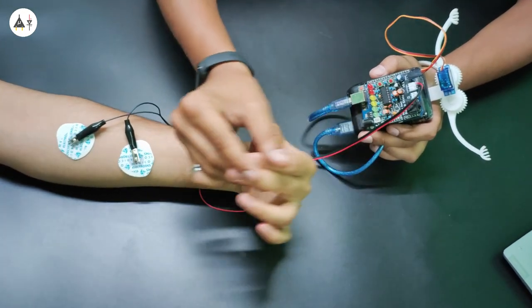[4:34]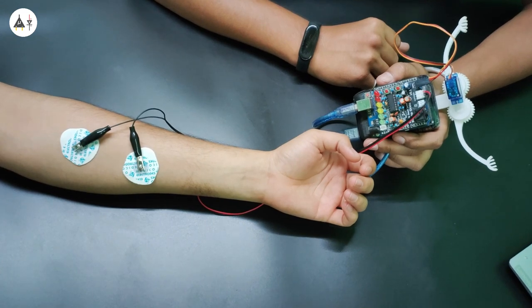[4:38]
Now how to convince you that Muscle BioAmp Shield was actually detecting the EMG signals? So if I move his hand, the signals are not detected. Why? Because the action potential was not generated in the muscles. But if he is willingly doing it, then again it works fine.
Now, what was the purpose behind making this Muscle BioAmp Shield? We want to make neuroscience reach out to a large audience, especially students, because neuroscience as a term is not common to them as compared to coding, AI, machine learning, robotics. And the irony is that we can use all these with neuroscience as well. So we want to make neuroscience a mainstream and cool thing for students. And what better way than reaching out to them with an interesting game like this muscle controlled game. So let's make neuroscience easy to learn and make everyone aware about it.
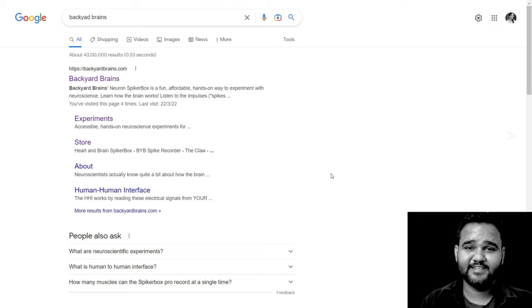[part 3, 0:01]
record biopotential signals using Backyard Brains Spike Recorder in conjunction with the BioAmp hardware, specifically with BioAmp EXG Pill, but you can use any BioAmp hardware of your choice like Muscle BioAmp Candy, Muscle BioAmp Biscuit, Muscle BioAmp Shield, and more hardware is coming soon, so stay tuned for that. Now without further ado, let's get started.
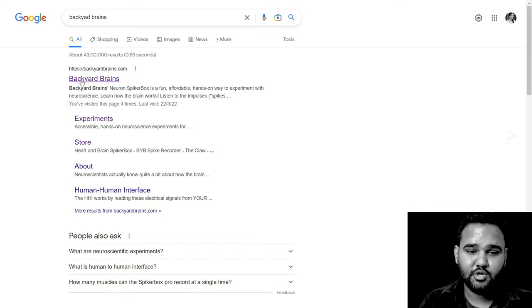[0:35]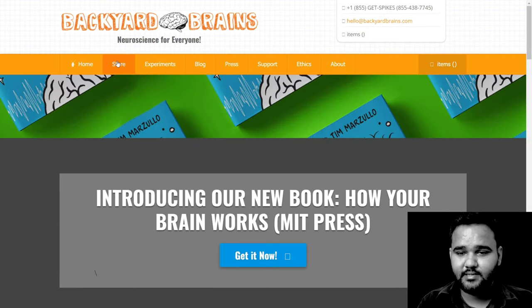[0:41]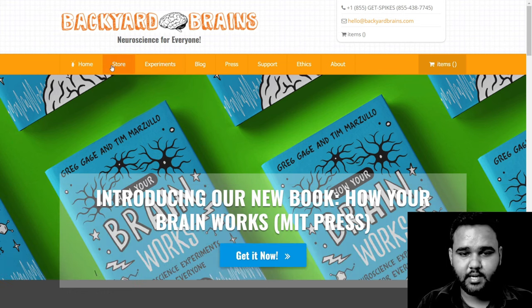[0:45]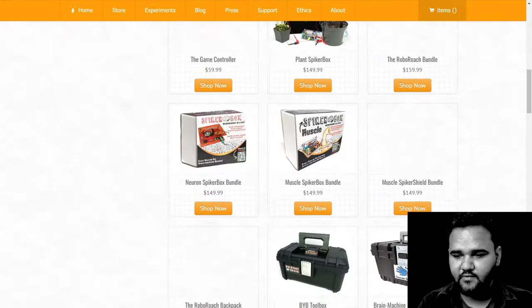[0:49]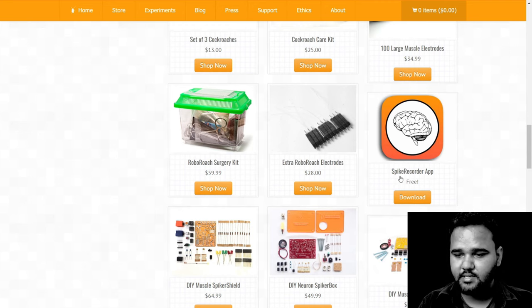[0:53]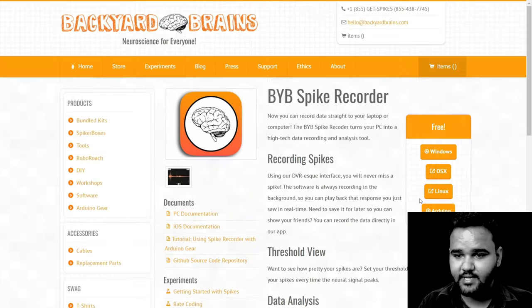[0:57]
You have to go to the Backyard Brains website. Just click on this link, backyardbrains.com. Then you have to search for the Backyard Brains Spike Recorder. Under store, you will find a link to download the software. The software is called Backyard Brains Spike Recorder. So just go to this link.
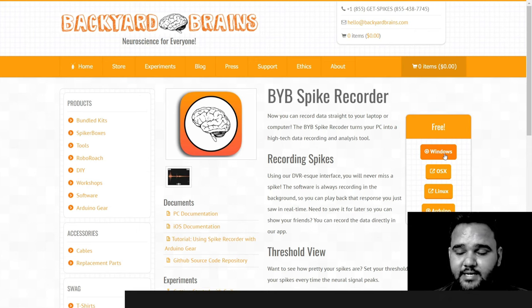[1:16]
Now you have the option to download it for Windows, OS X, Linux, and you have the Arduino sketch also. We are using Windows, so we'll just click on this, but we have already downloaded the software and installed it. You just have to click on this, install it.
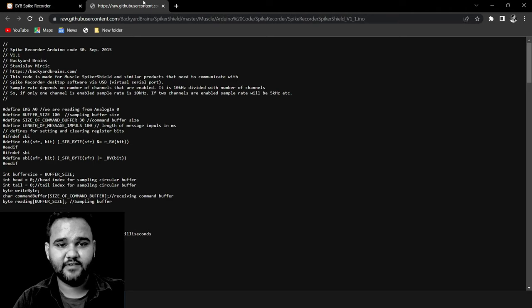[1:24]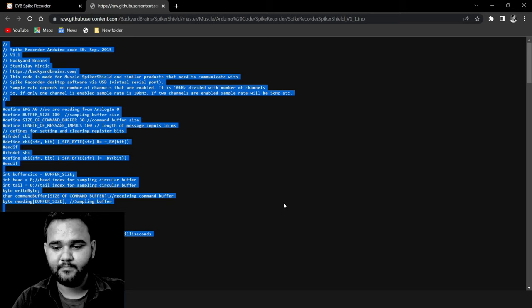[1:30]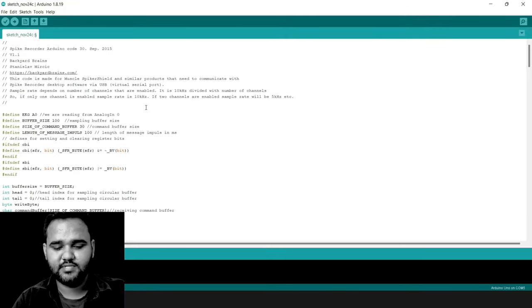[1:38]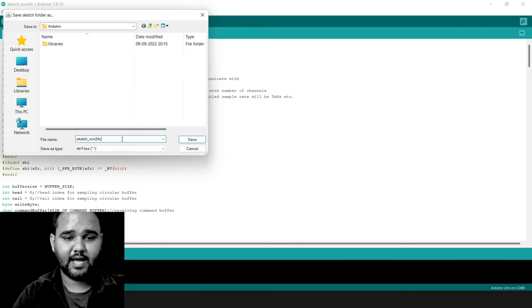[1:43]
Now that you have installed Backyard Brains Spike Recorder onto your laptop, just click on this Arduino button to download the sketch. It will open up this file called Spike Recorder Arduino Code. Just do Control A, Control C. Now you have to create a new blank sketch in your Arduino IDE, do Control V, and to save just press Control S. It will ask you for the name. I'll give it a name of Spike Recorder Code.
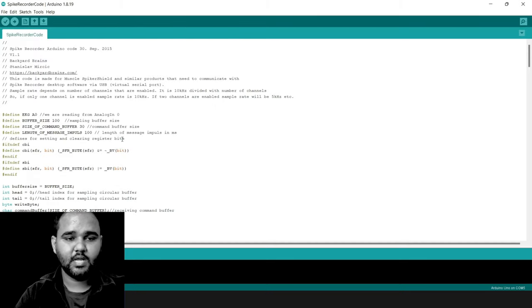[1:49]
Now it is saved. Now you are ready to flash the program onto your Arduino Uno. Just connect your Arduino Uno to your computer. Go to Tools. Make sure the COM port is selected for the Arduino Uno. In our case, it is COM5. Then I'll just click on this upload button. It says uploading. Now uploading is done.
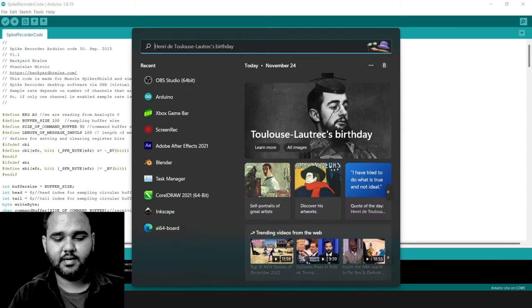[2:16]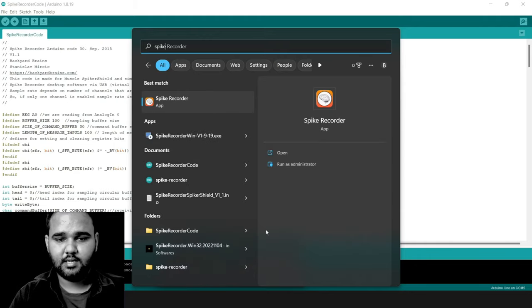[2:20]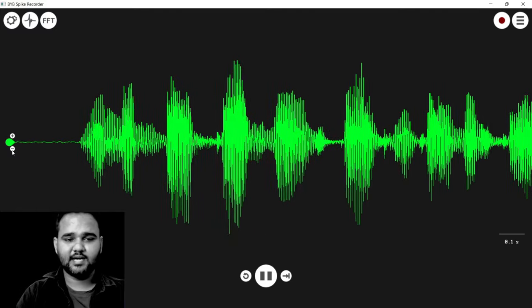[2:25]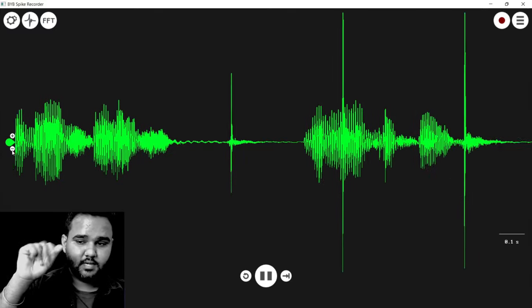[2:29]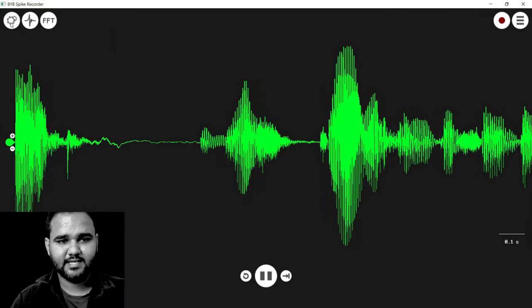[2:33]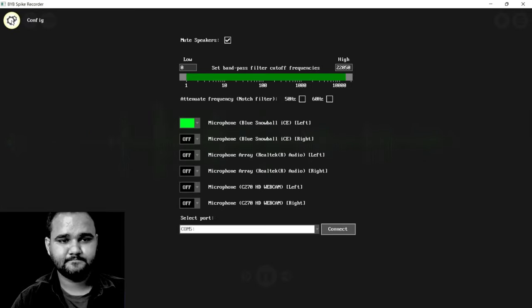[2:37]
Now you have to open Backyard Brains Spike Recorder. So I'll search for Spike Recorder and I'll just open it up. When the Spike Recorder starts, it will start recording from your audio source, the microphone. To change that, just go into settings, the first button from the upper left hand corner. Select the COM port of your Arduino Uno and click on connect.
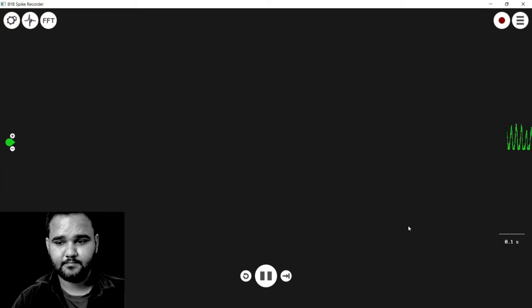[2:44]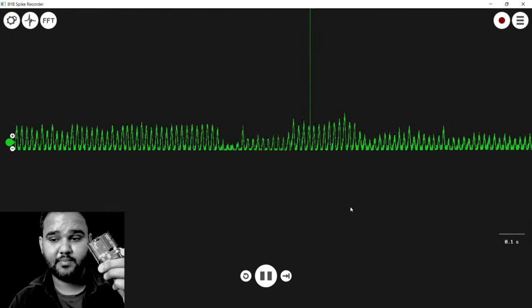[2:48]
Now Arduino is connected, but we haven't connected the BioAmp EXG Pill to the Arduino. A basic connection diagram to connect the BioAmp EXG Pill to the Arduino is currently shown on the screen. Just make the connections and come back to this video. We'll just do the same and we'll start recording our biopotential signals. That includes your ECG, EMG, EOG, and EEG.
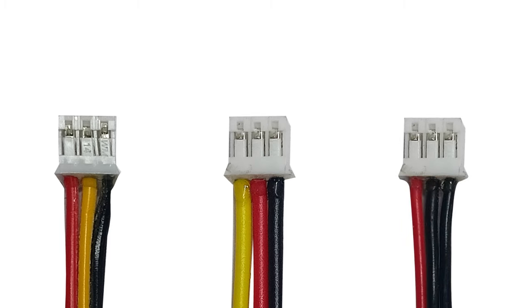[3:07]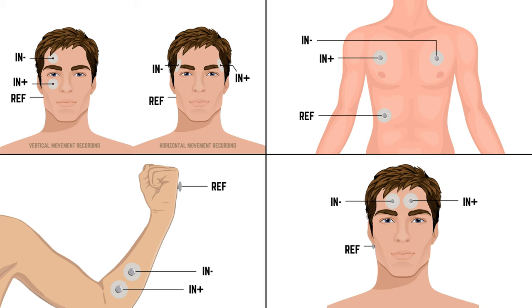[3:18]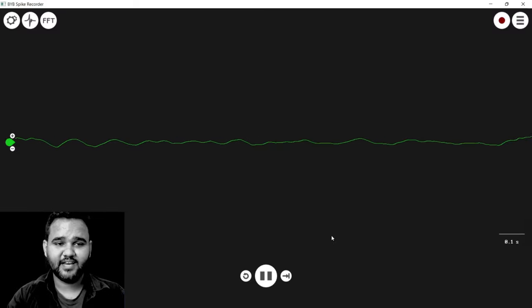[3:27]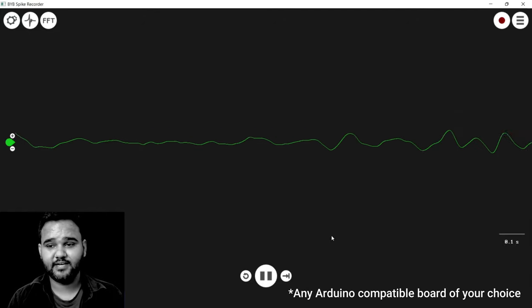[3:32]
We have delivered three types of BioAmp cables since its inception. All of them are shown on the screen right now, and you must connect IN positive, IN negative, and reference of the BioAmp to the IN positive, IN negative, and reference point as shown in the connection diagrams. Do not rely on the color coding of the cables, as they might be different for you. Now that you have connected the BioAmp EXG Pill to your Arduino Uno or any Arduino of your choice, you can follow the diagram on the screen to connect the electrodes to your body to record ECG signals.
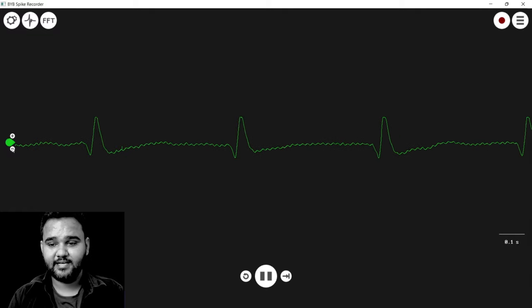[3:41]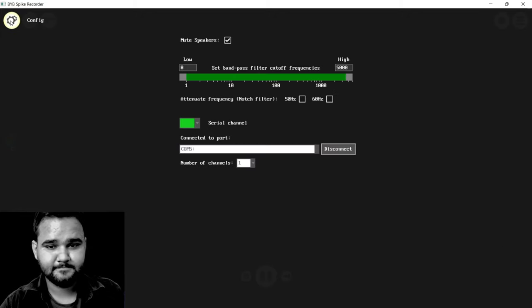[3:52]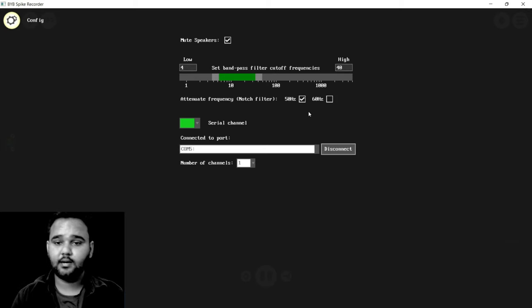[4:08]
We have connected the BioAmp EXG Pill to record ECG signal from my heart. You can see there are some signals coming up, but they are not very clean. To clean the signal, we'll go back to the settings. We'll set the bandpass filter for our recording. I'll choose 4 as the lowest frequency and 40 as the highest frequency. I will also enable the 50 Hz notch filter because I am in India. You can choose 60 or 50 Hz according to your location.
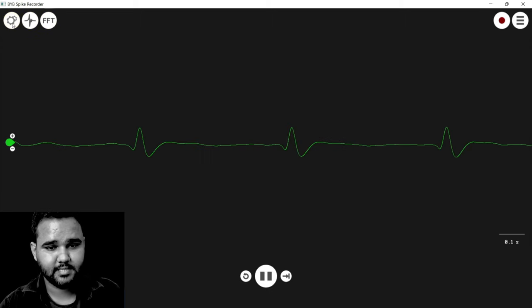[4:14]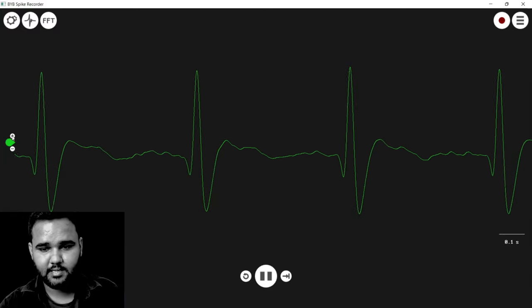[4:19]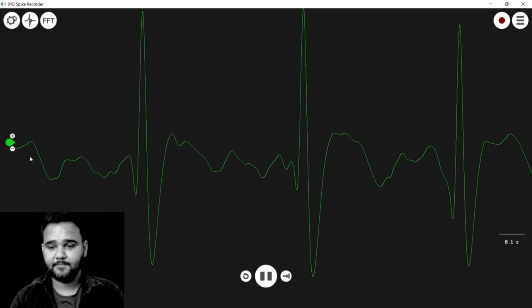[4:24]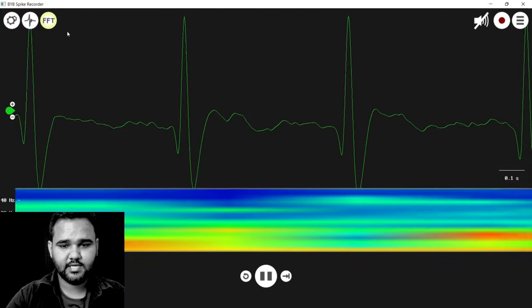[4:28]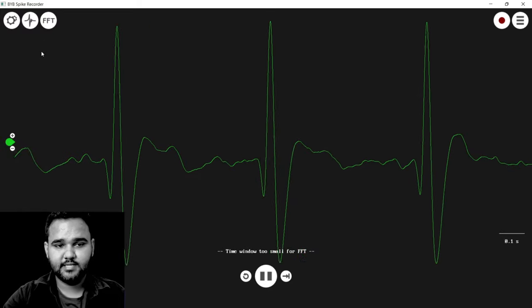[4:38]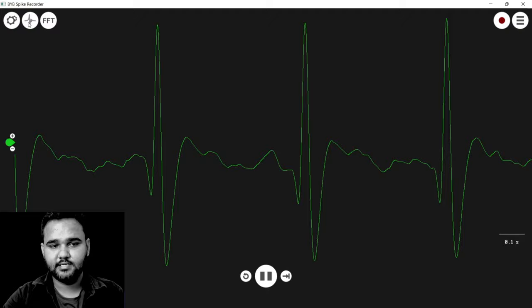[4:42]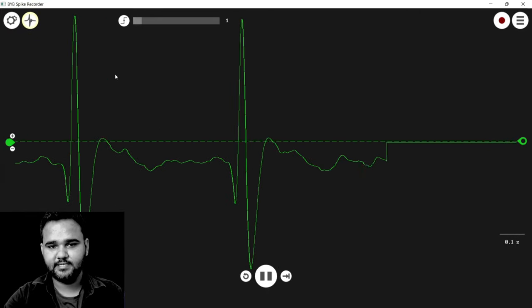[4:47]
Now let's see the signal. It seems pretty clean now, and I think now it is looking like an actual ECG. Not only visualization, you can also open up the FFT graph to see the frequency domain signal of your biopotential signal. We don't really need this for ECG. We'll see how to detect the peaks of our ECG using this tool. So now you can see that ECGs are coming.
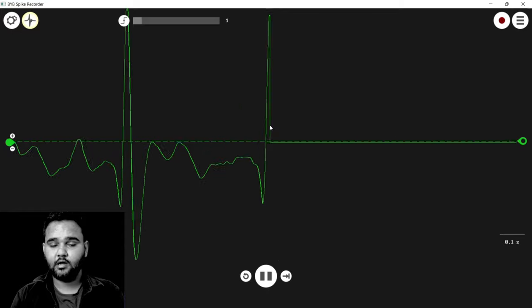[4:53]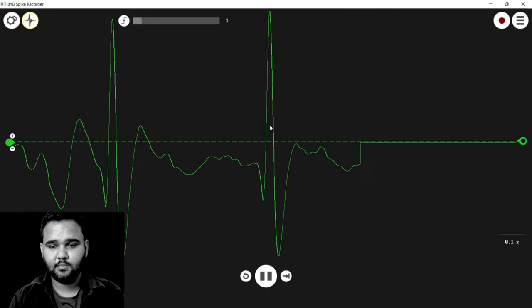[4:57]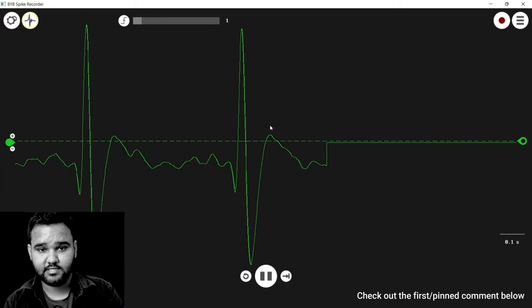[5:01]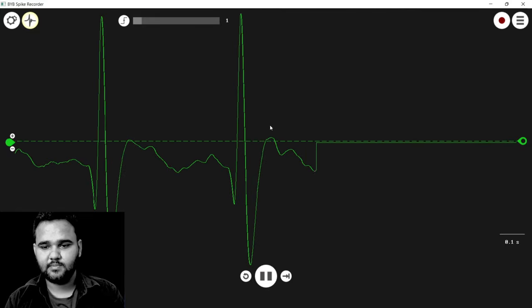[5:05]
There are various options available for Backyard Brains Spike Recorder for specifically recording and monitoring of biopotential signals. More information will be shared in the description box below, and you can check out the first link of this video. If you are seeing this on Crowd Supply, you can check all the links available and the diagrams available.
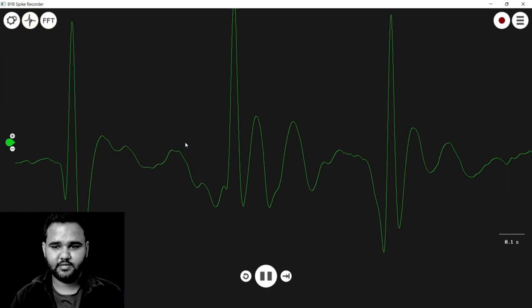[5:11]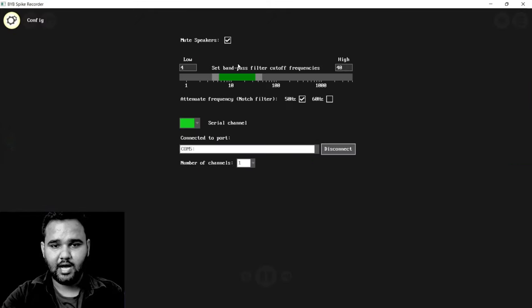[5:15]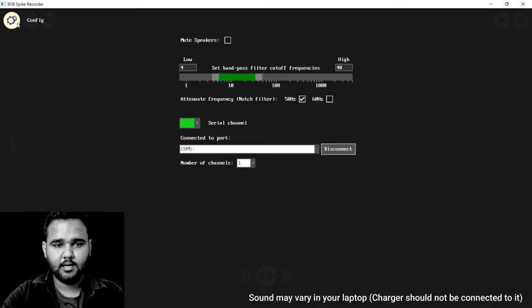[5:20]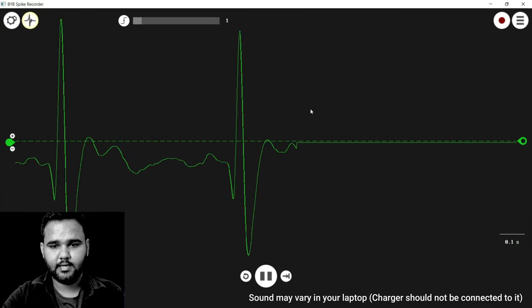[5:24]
Not only visualization, we can also hear our signals. We'll have to go to settings, uncheck mute speaker, go back and enable this.
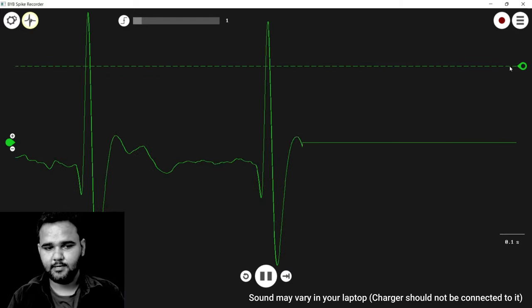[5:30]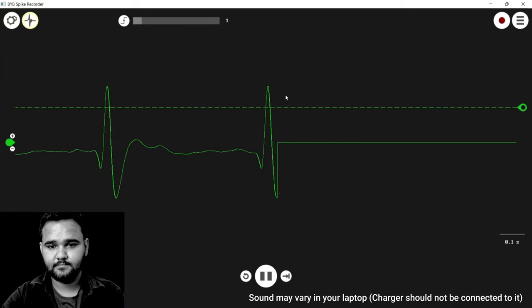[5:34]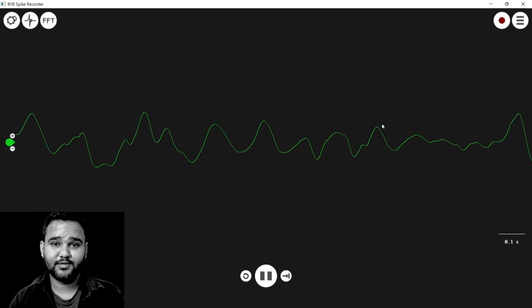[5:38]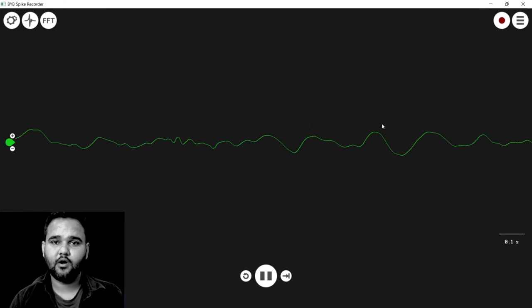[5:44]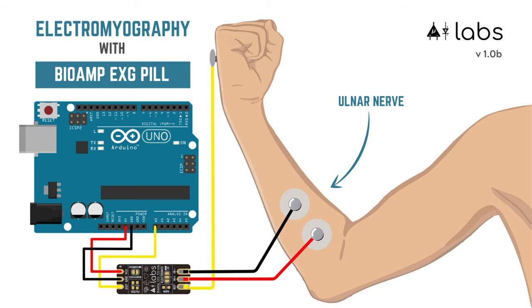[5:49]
I hope you were able to easily record your ECG signal. Now let's see how to record the EMG signal. We are going to record the EMG signal from our ulnar nerve. A connection diagram is being shown on the screen right now. Just make the connection and come back to this video.
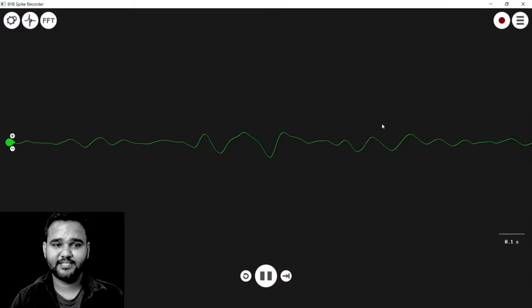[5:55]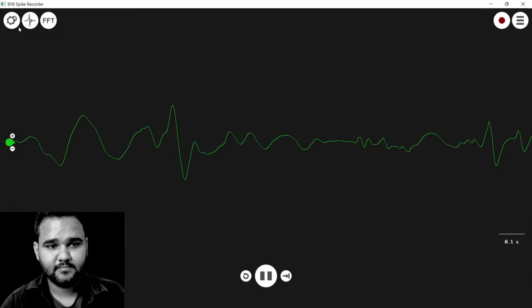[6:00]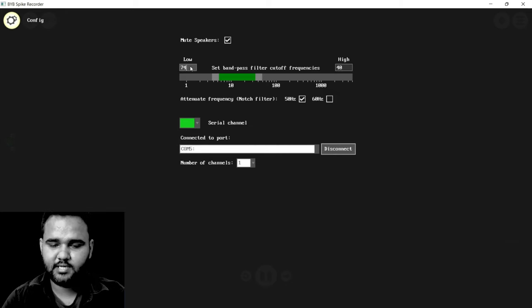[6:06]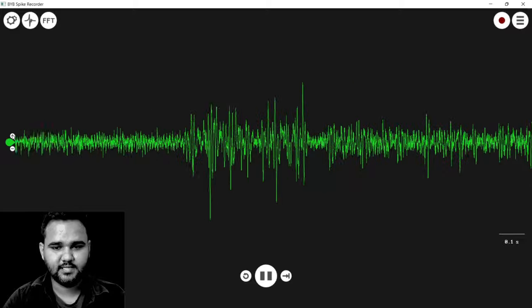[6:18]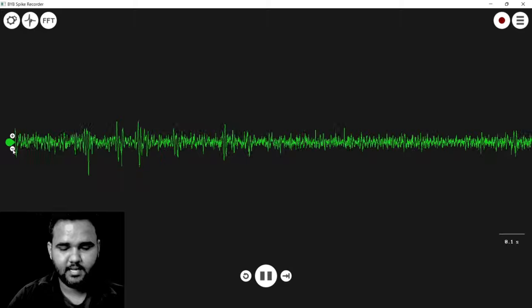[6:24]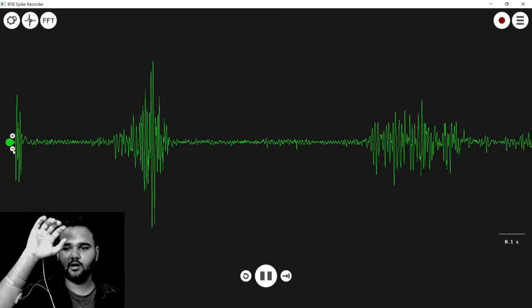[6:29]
I have already made the connection, but the configuration is set for ECG. We'll just change that. I'll go to settings. I'll change the lowest frequency to 74 Hz and the highest frequency to 740 Hz. Notch filter for 50 Hz is already set, so we are good to go. I'll press on this plus button to increase the signal visualization. So as you can see, we are able to record EMG signal very easily.
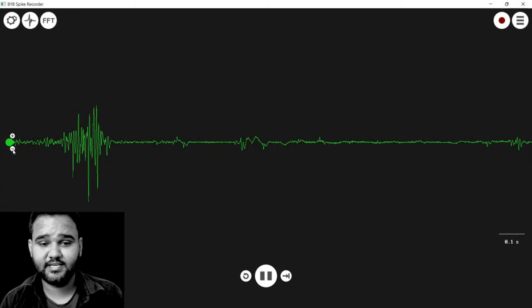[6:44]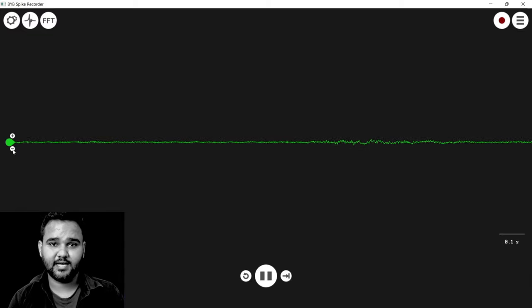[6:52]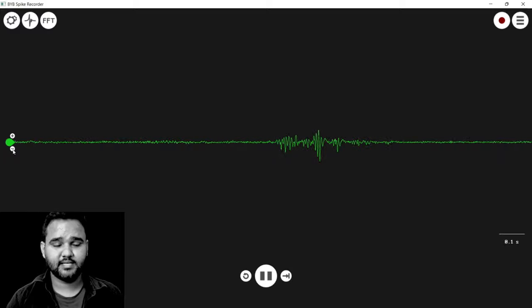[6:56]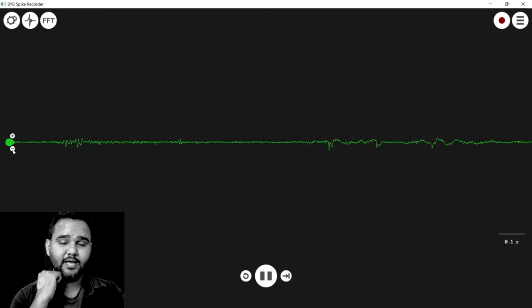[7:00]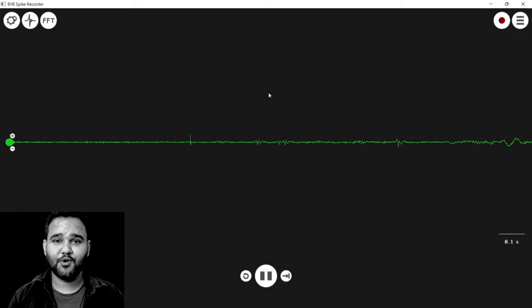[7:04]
Using this connection, you can record muscle signals from any part of your body. Just connect the positive and the negative sensory electrodes to the muscle you are targeting and the reference electrode somewhere where there is no interference from the muscle you are recording. That can be a bony part like your elbow or any other part that can be easily connected to a gel electrode. I hope you are feeling pretty excited after recording your heart signal and your muscle signal.
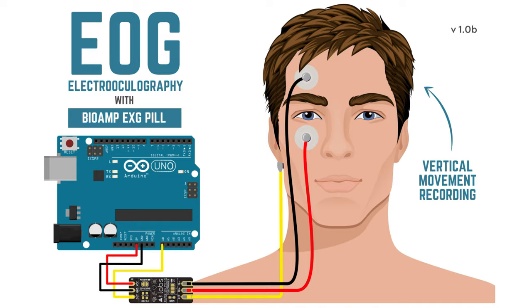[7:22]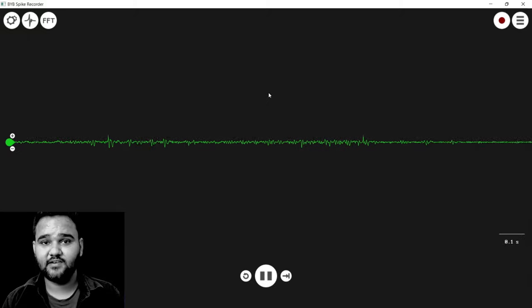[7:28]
In this experiment, we are going to record a very fun signal, that is our EOG, or the signal near your eye. We are going to specifically record vertical movement of our eye, but you can also do horizontal recording. Connection diagram for both are shown on the screen right now. Just make the connection and then come back to this video. Let's start with the connection.
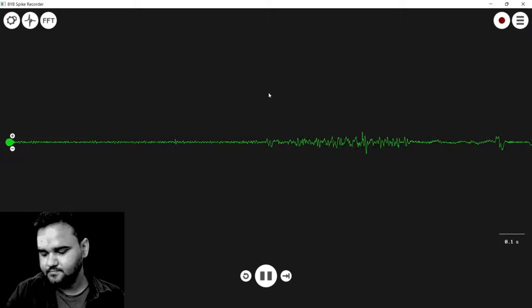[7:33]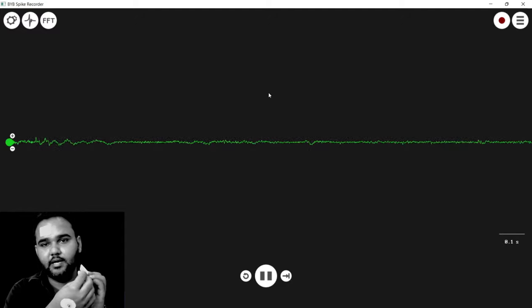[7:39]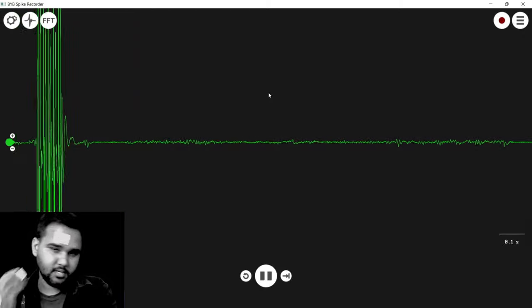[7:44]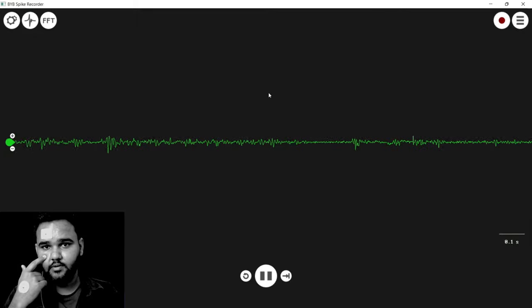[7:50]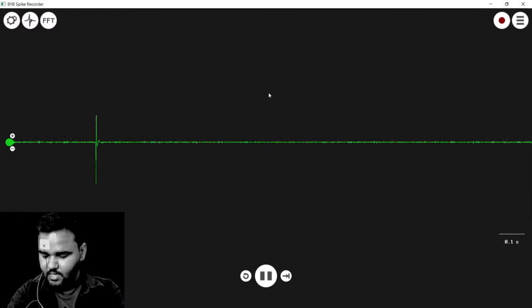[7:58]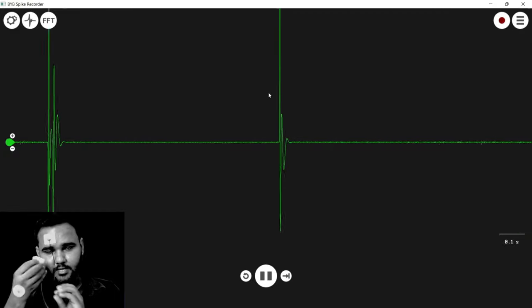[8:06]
So I'll take one gel electrode. I'll put it here. Although it is recommended to have the connection made before you remove the sticker. So just connect the electrode, then you remove the sticker, and you have to connect the reference behind your ear, one electrode above your eye and one electrode below your eye. I'll just remove the electrode from my arm and I'll connect the electrode to my eye. I'll remove the other electrode. I'll just connect the electrode first. I'll remove the sticker and I'll just place the electrode. Now we are done with the connection.
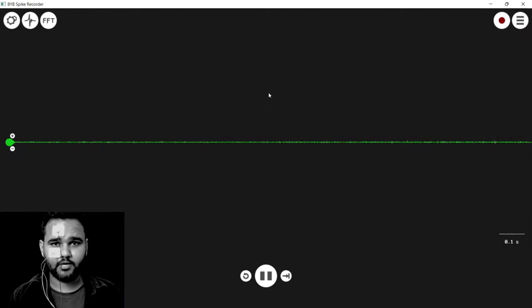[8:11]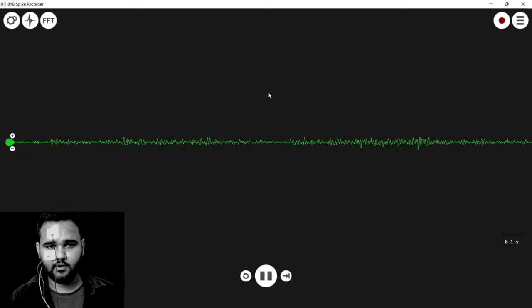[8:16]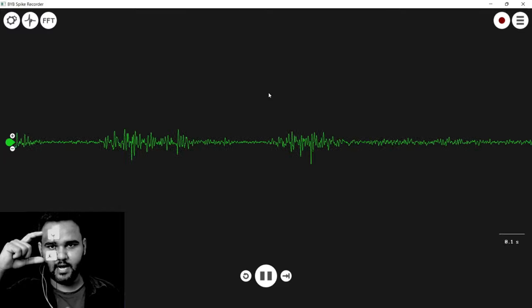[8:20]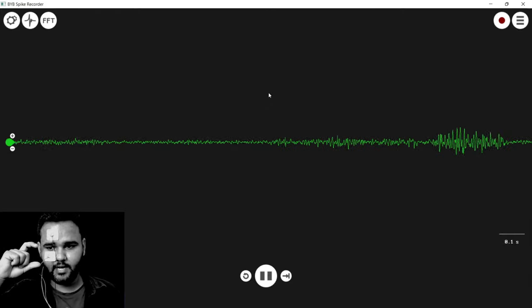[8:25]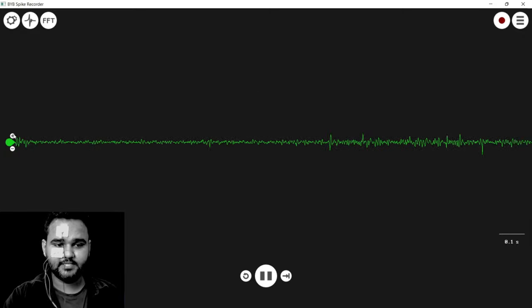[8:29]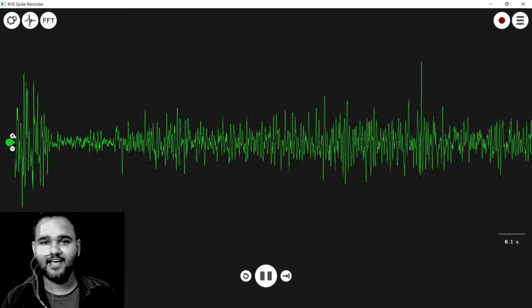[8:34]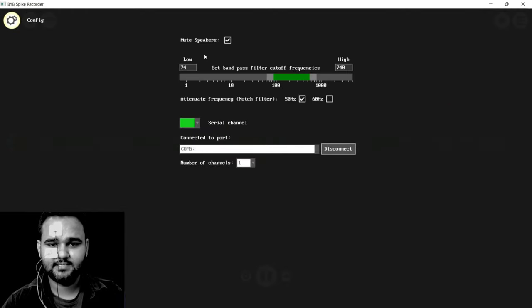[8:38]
Let's see how to record your EOG. The Backyard Brains Spike Recorder is already set for EMG recording. So if I move my eye, basically there are some muscles near your eye that are being excited when I do this movement. And what you are seeing here is the EMG signal of your eye. But we are mostly interested in the EOG signal. So let's configure the software for that. Go to settings. We'll use the signal of 2 to 10 Hz.
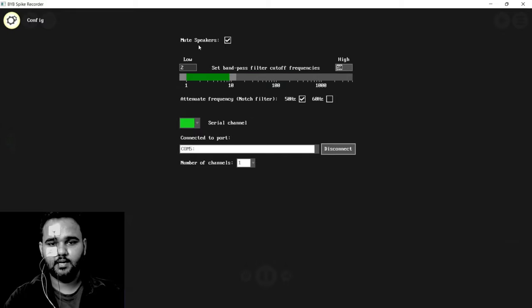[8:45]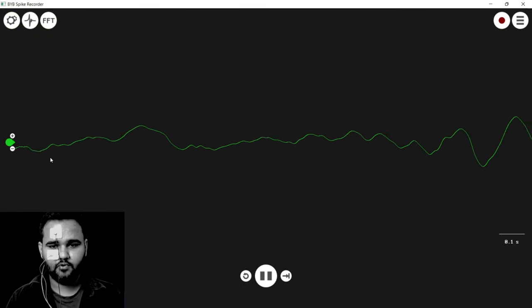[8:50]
Now we'll come back to the visualization area. Now if I move my eye, you can see there are some signals that directly correlate to the movement of my eye, mostly the vertical movement. If I do horizontal movement, there is not much difference, but if I do blinks or if I do vertical movement, you can clearly see the signals. Blink, blink, blink, blink, up, down, up, down. So in this experiment, you have seen how to record the vertical movement.
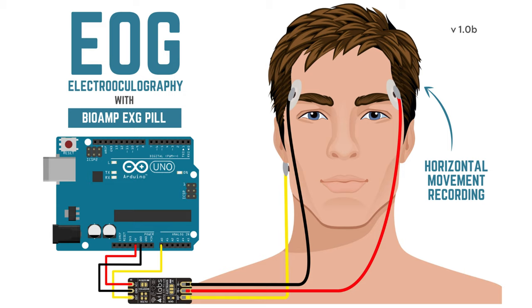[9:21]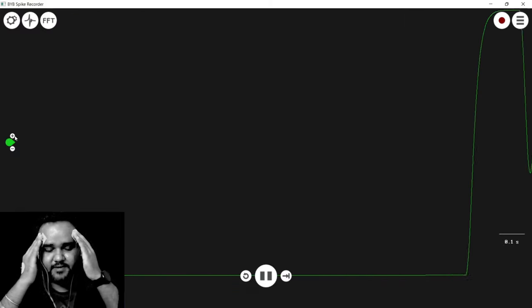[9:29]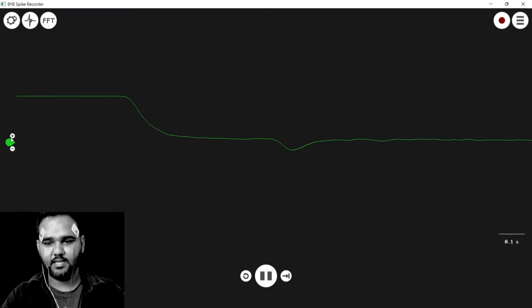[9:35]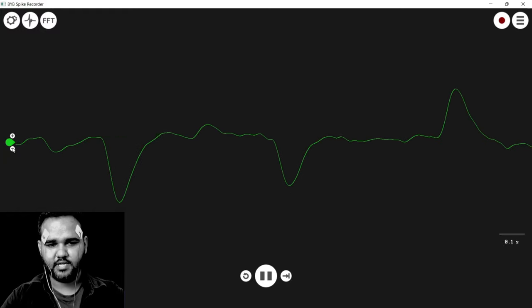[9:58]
I think we can also do the horizontal movement recording. Let's change the electrode position. It is very painful. So I'll just connect the electrodes for horizontal recording. Now it is ready. So if I move left and right, you can see the signal. I'm not moving my eyes right now. Signal is almost flat. Left, right, left. Let's try to increase the signal visualization. Now you will be able to easily see the signals.
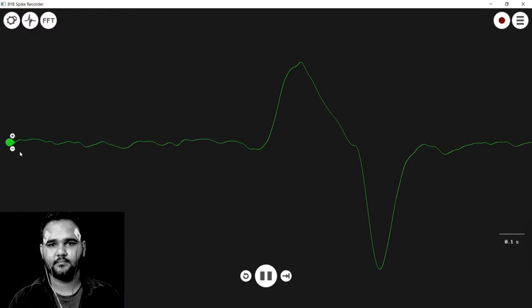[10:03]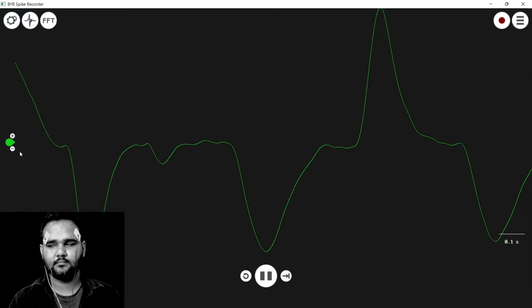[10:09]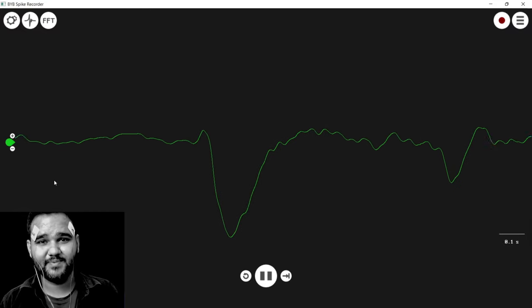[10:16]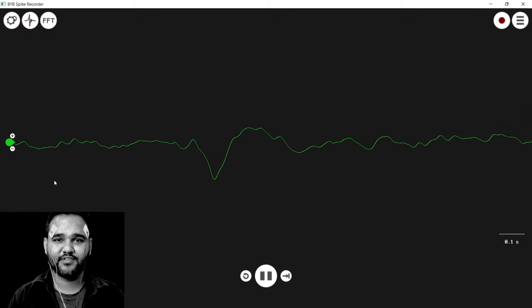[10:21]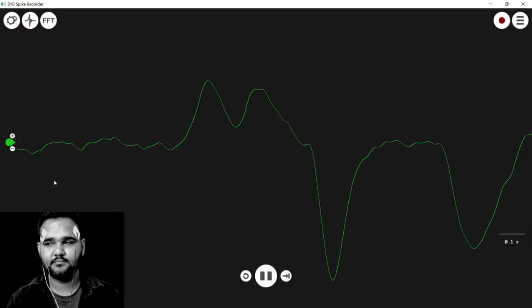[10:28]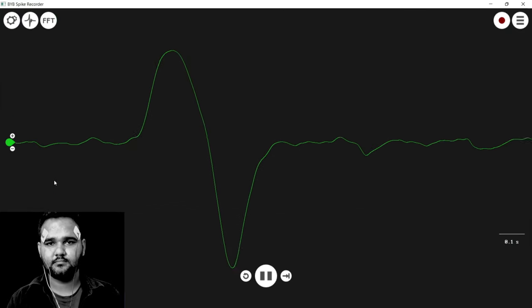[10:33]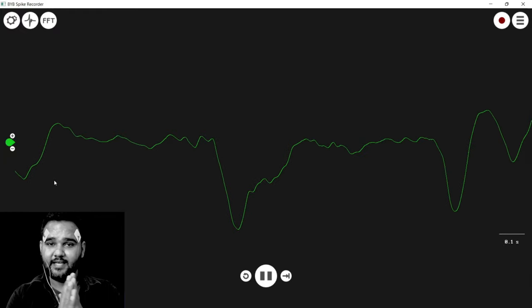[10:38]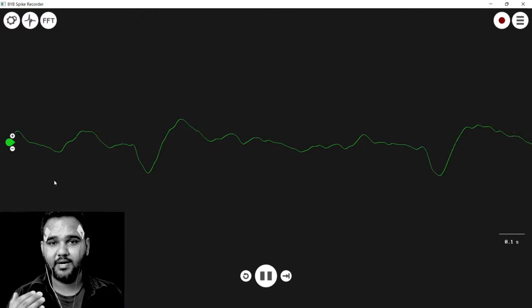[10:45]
Looking at the signal, you might be thinking that we can do eye tracking with this. That is definitely possible, and we'll make a video for that also. Just take a look how the signal looks when I move my eyes to the right and my eyes to the left. You can clearly see that the difference in the signal is enough to detect if I am seeing on the right or on the left. The same can be done for vertical movement, up or down. If you combine all these, you can create an eye tracking device using EOG.
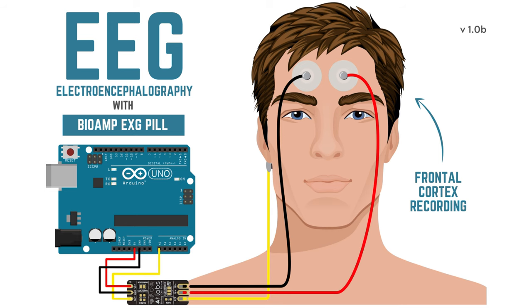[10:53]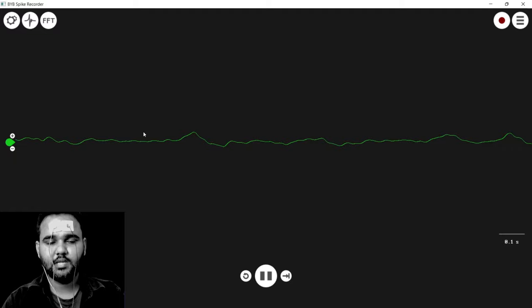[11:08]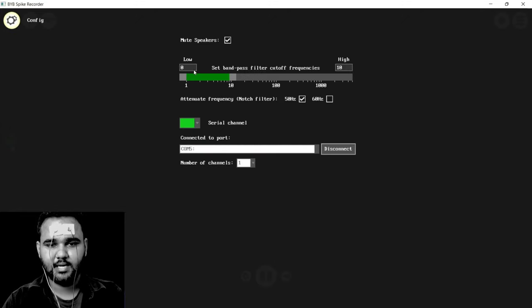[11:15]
Let's see the EEG recording now. You might be waiting for this one for a long time, the entire video actually. So it is pretty simple, although I recommend to use new electrodes. We are going to use the same electrodes right now. Just place the electrodes on the forehead. Now we are going to configure the Backyard Brains Spike Recorder for recording EEG signals. Click on the settings button. Set the frequency from 4 Hz to 14 Hz. Basically, we are targeting alpha waves right now.
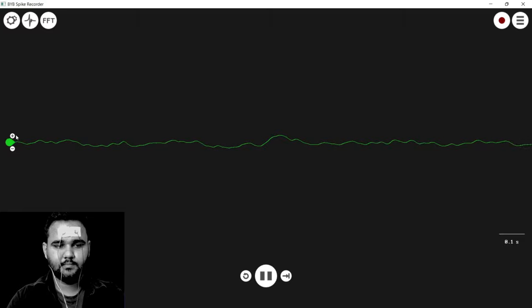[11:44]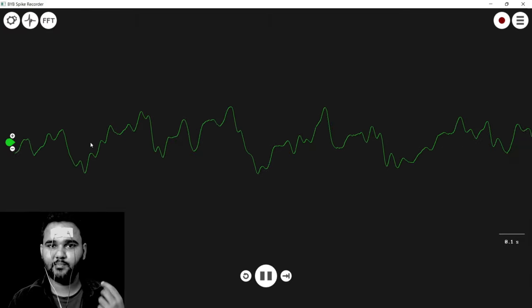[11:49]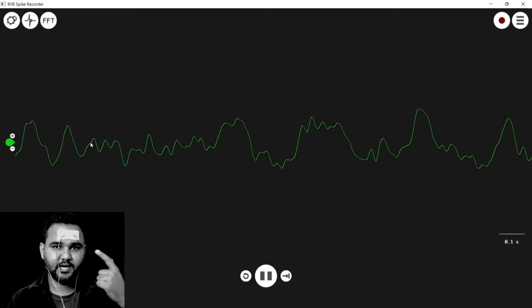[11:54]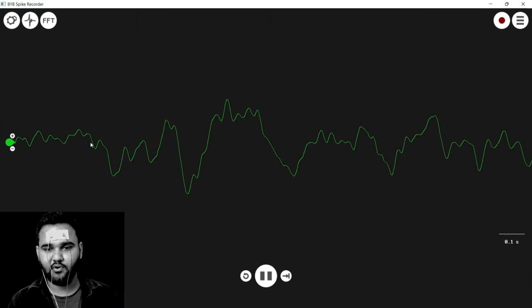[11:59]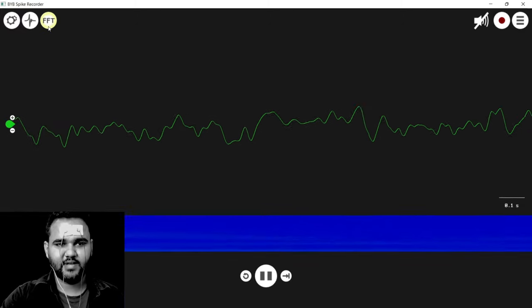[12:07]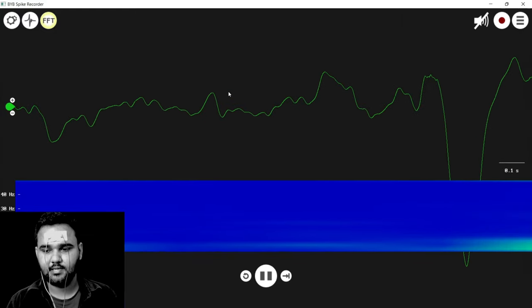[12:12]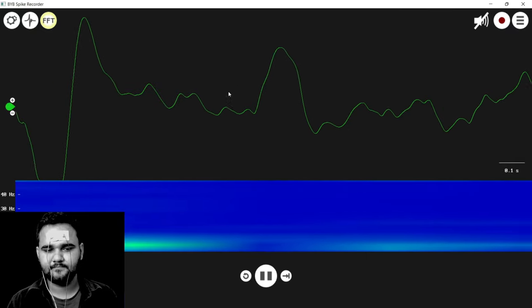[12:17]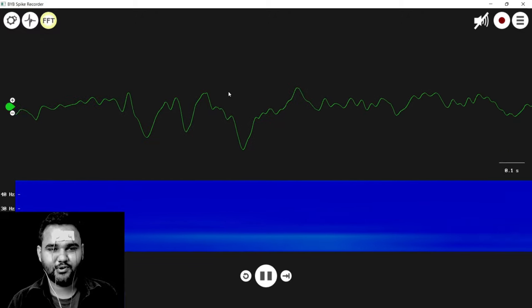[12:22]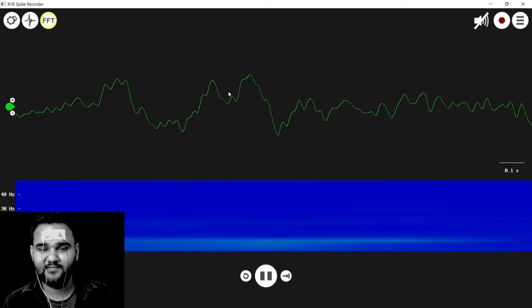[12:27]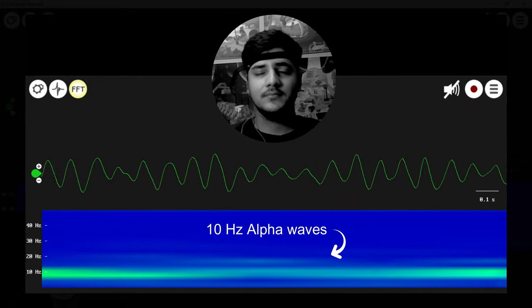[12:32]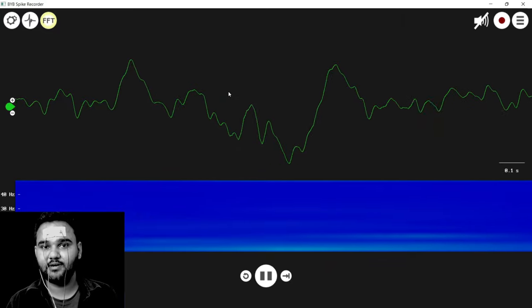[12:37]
In this case, an FFT graph is required, and currently you can see the FFT graph is pretty clean. But if I move or do some movement, you can see there are some signals. Let's try to record alpha waves. I'm pretty sure it will not be possible because we are recording from the frontal cortex, but it is possible when you record from the visual cortex. A video will be shared in the description box below where we recorded alpha waves from John's head. So let's try to record alpha waves. I'll close my eyes now.
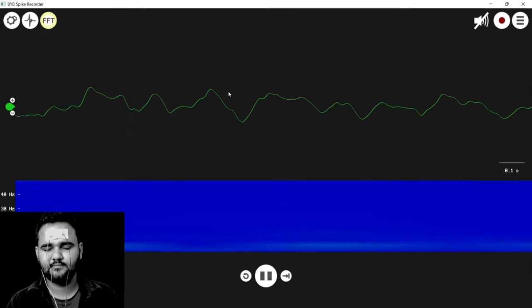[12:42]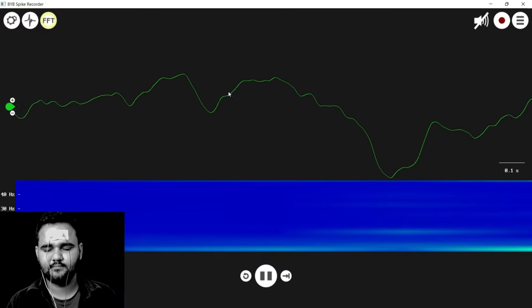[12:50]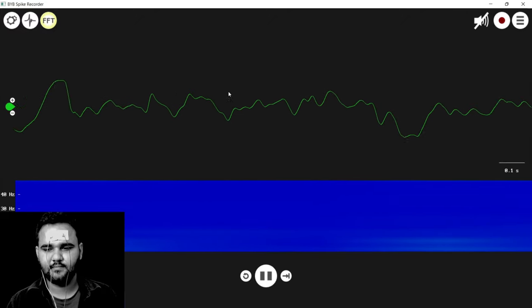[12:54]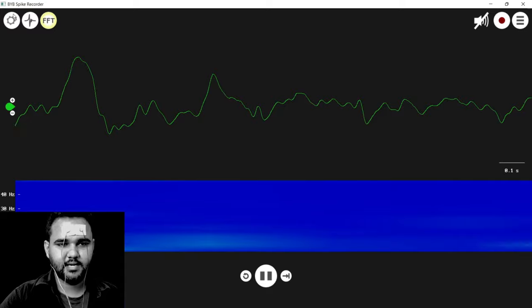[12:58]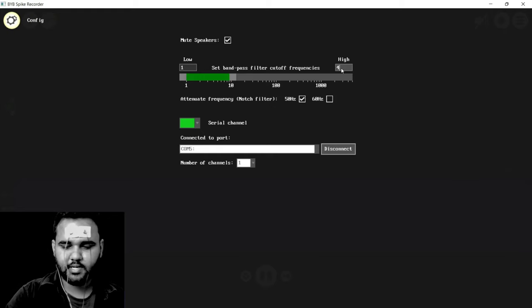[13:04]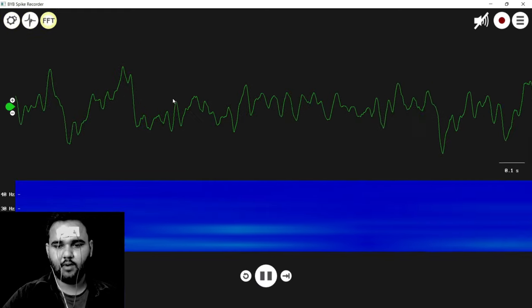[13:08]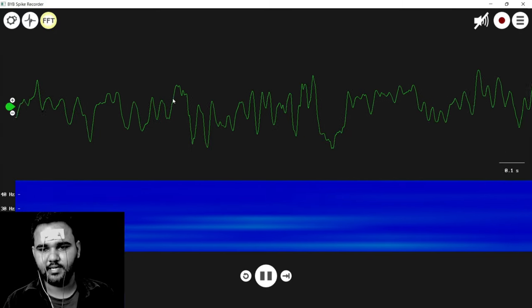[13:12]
There was some difference, but not much. We'll increase the frequency response from 1 Hz to 40 Hz. Let's see. Now a lot of signal is coming through. Let's see if we can record something now. I close my eyes.
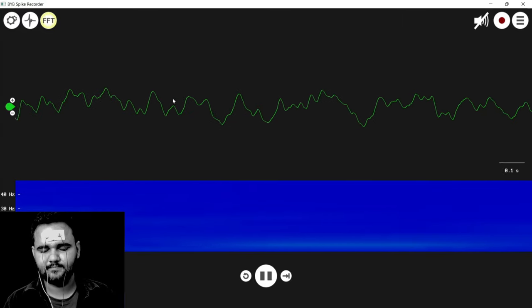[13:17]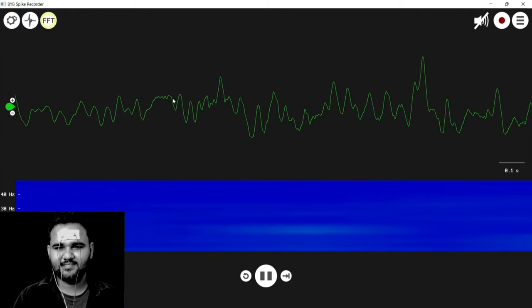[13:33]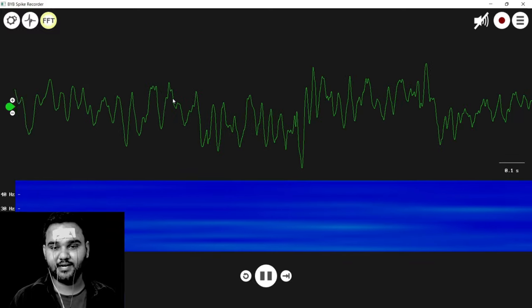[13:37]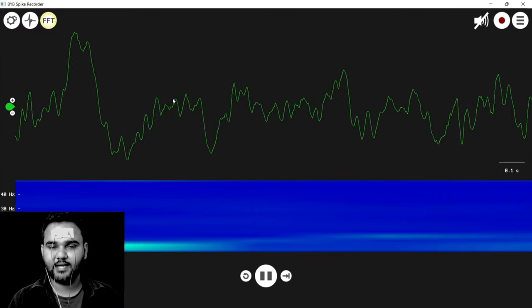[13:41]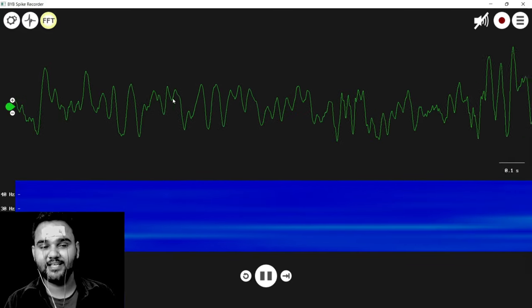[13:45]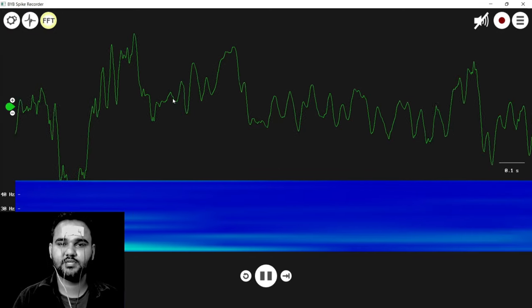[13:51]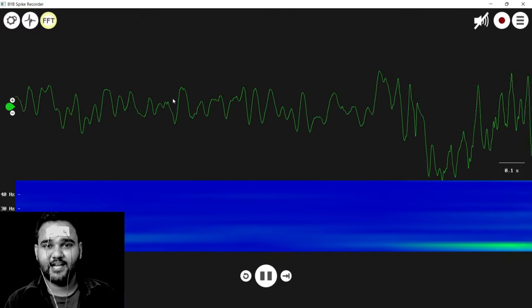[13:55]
So it was a very basic experiment. You can take it further and record the EEG signal from around your frontal cortex and visual cortex. Let us know how it goes for you, and we'll keep improving. We'll show more ways of recording EEG signal and all the other biopotential signals using our upcoming hardware and the BioAmp EXG Pill. That was all for this video.
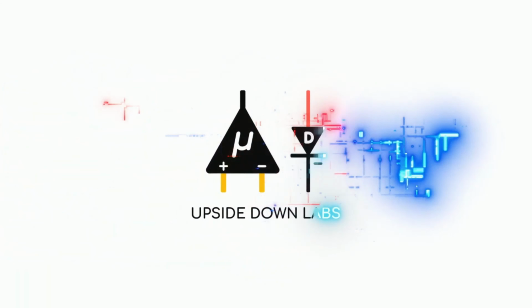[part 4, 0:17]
In the last episode, we connected bioelectricity amplifiers with microcontrollers. Make sure to check it out if you've missed it. Now we'll finally start detecting some signals and coding Arduino, ESP32 or whatever you have in order to visualize them. So let's begin.
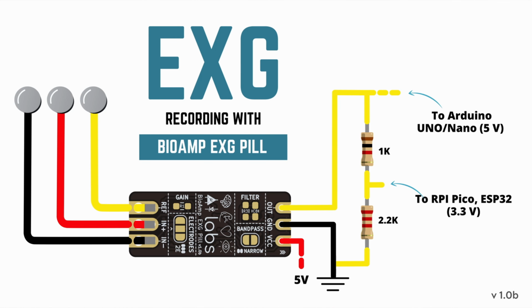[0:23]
Before we move on to coding, I'd like to point out that boards like ESP32 or Raspberry Pi Pico need to be connected like this, through a voltage divider because they operate at 3.3 volts.
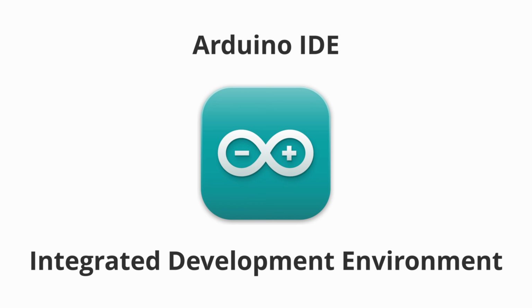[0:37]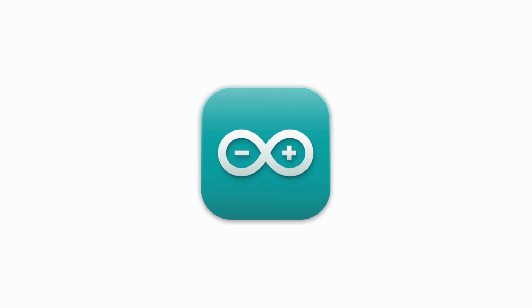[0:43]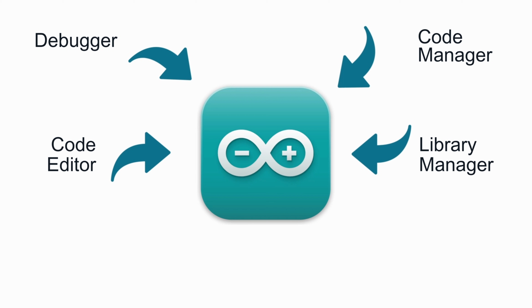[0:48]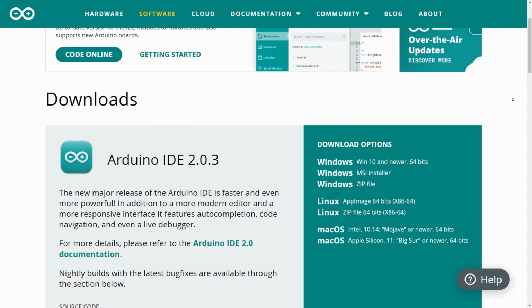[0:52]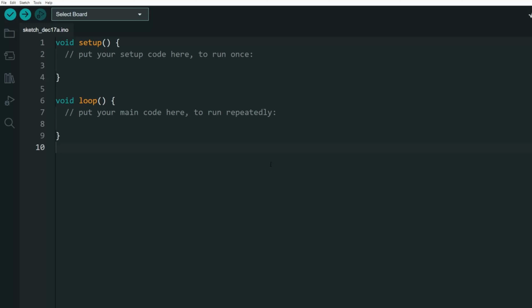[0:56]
Okay, now let me introduce to you the Arduino IDE. IDE stands for Integrated Development Environment, which means it has all the tools you need integrated in one program. In this case, it has code editor, debugger, board and library manager, compiler, uploader, etc. You can download it from the official site. I recommend the new second version. When you open it, you'll be presented with this screen.
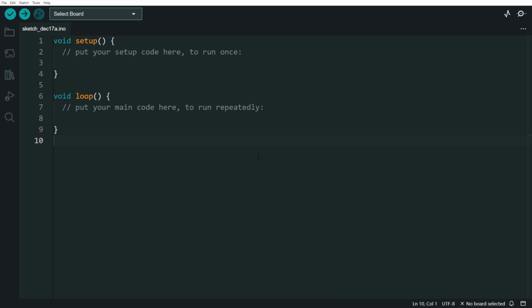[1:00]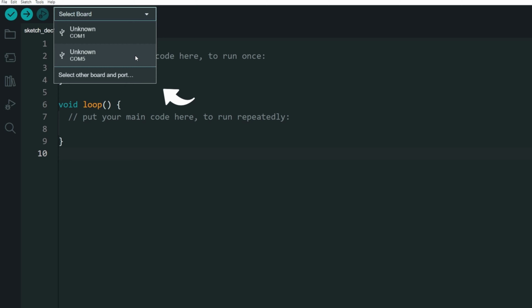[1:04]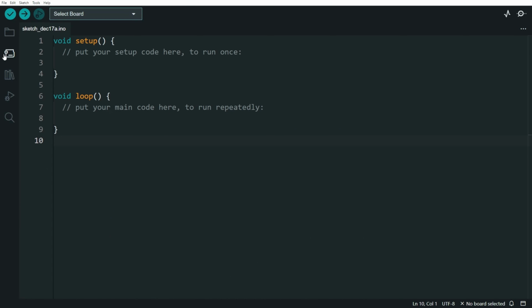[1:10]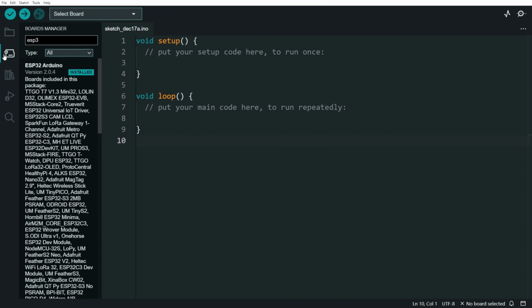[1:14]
Now you can plug in the microcontroller of your choice. In this box, you choose the COM port that your board is connected to and identify it by searching the name here. If you can't find it, you should search for it in the board's manager and install the extension. Now paste or open the fixed sampling sketch from the GitHub repo.
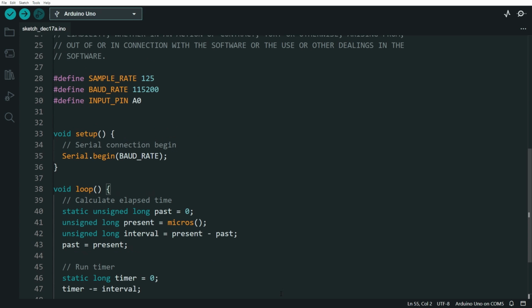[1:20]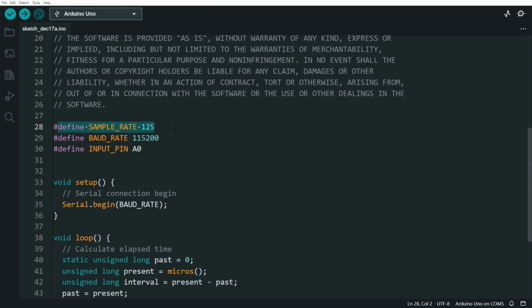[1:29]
Maybe it looks overwhelming if you've never programmed, especially in C++, but don't worry, it's nothing too complicated to understand. Basically what it does is it lets you set a number of times it's going to read and send the sensor readings over serial. At the end of the day, you don't really need to understand, that's why we're here.
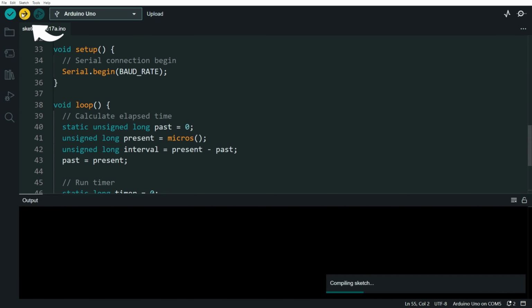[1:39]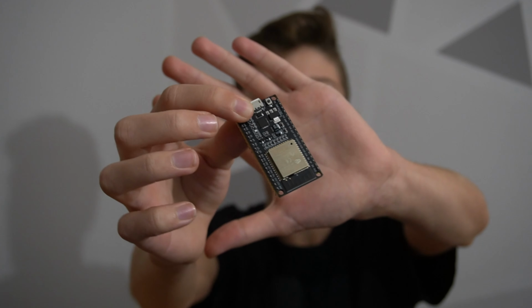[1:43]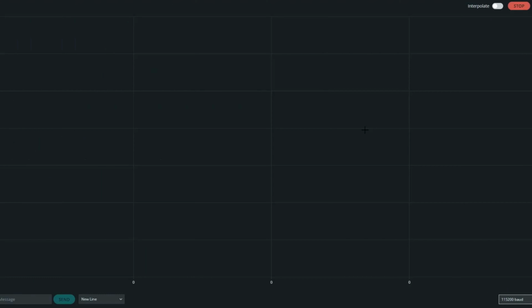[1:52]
Click this button in order to upload, but be aware that if you're using ESP32, you need to hold the boot button before uploading. Sweet, now your board is ready, and if you connected the BioAmp to A0, you can open this tool, Serial Plotter, in order to see the data. Just make sure the baud rate is set to 115200.
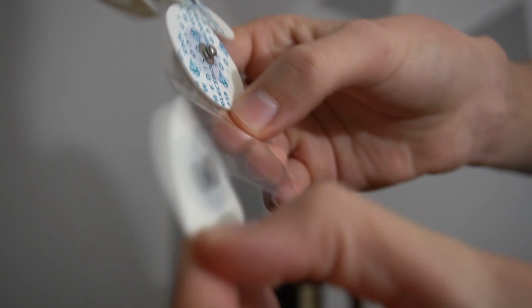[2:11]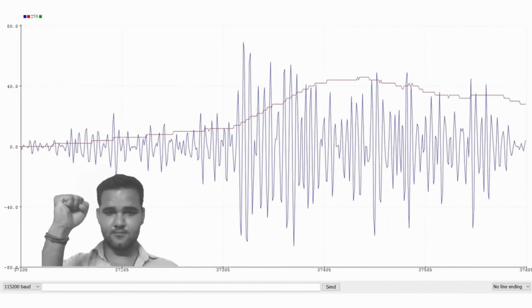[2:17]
In this video, I'll only demonstrate and show what EMG, EOG, ECG and EEG look like, but we'll go more in depth in the following episodes. Here are the electrode placements for EMG, or electromyography. And here's how signals from muscles or nerves look like.
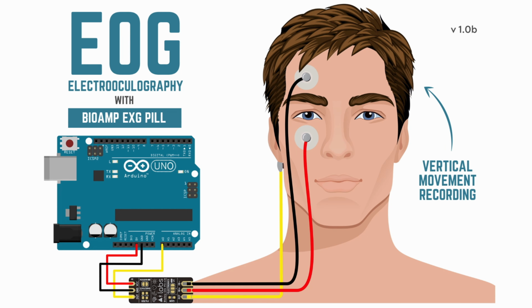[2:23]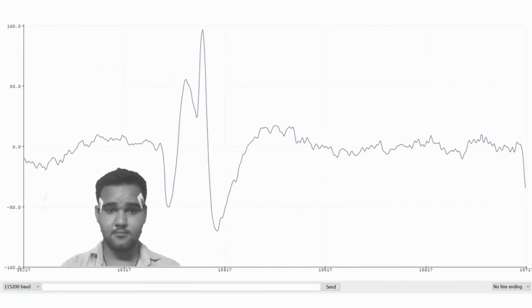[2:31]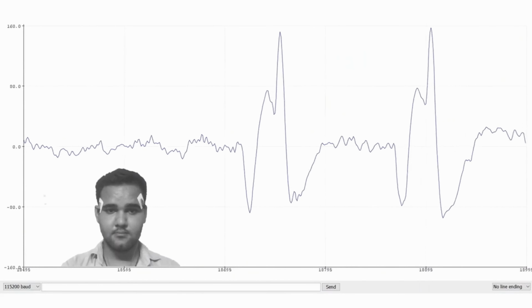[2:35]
This is EOG, hence the name electrooculography. You can use it to detect blinks as well as horizontal and vertical eye movement. Do you see potential in this, regarding the fact that the spikes are correlated to the eye direction? Tell us in the comments.
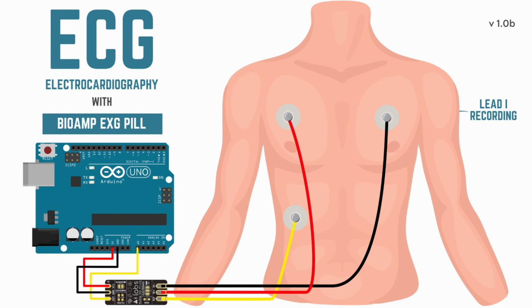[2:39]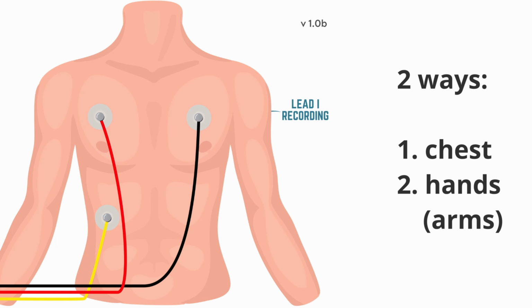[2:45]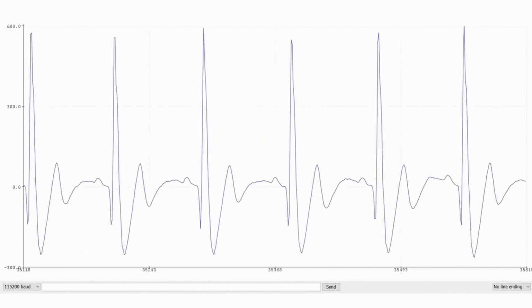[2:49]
Now comes ECG, or electrocardiography, a procedure you're probably most familiar with. You have two options, recording from the chest or hands. The idea is the same, half of the body slightly more positive on the heartbeat.
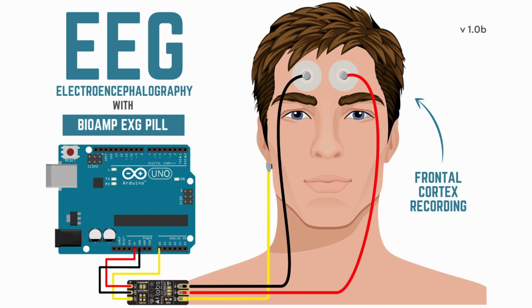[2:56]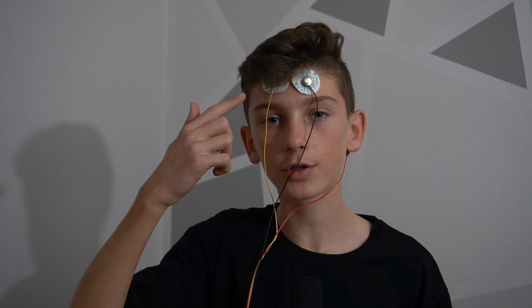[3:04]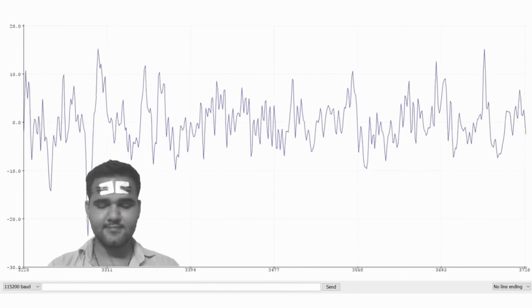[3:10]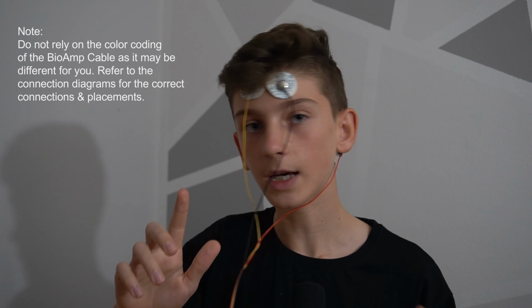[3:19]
And finally brainwaves, i.e. EEG or electroencephalography, the most interesting biopotential. Today we'll record from the prefrontal cortex, but when the time comes to talk about EEG, we'll try to do something different. And this is how these waves look like. This is not the best way to look at the EEG. We'll see later there are other graphs. I didn't mention, but this also applies to EOG. The reference electrode is put behind the ear.
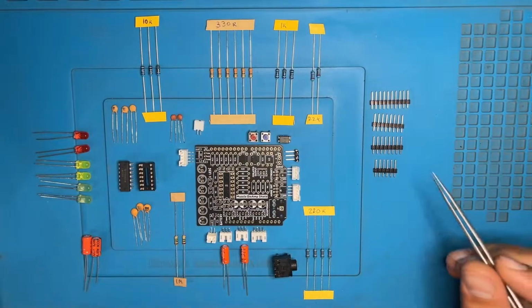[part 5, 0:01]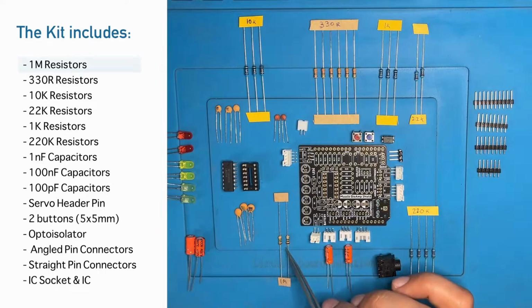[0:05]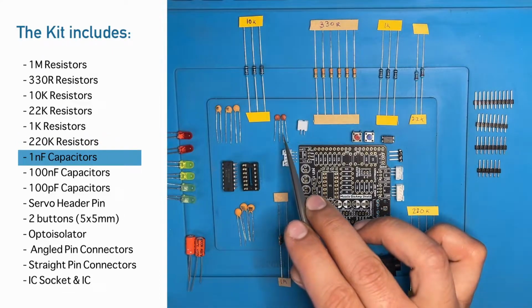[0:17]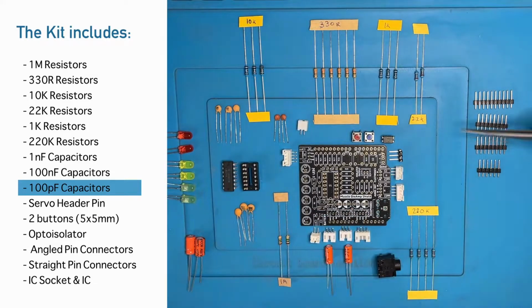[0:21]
Hi everyone, so today we are going to assemble our Muscle BioAmp Shield version 0.3. In the kit, we will get 1M resistor, 330R resistor, 10K resistor, a 22K resistor, 1K resistor, 220K resistor. After the resistors, we get 1nF capacitor, 100nF capacitor, 100pF capacitor, a servo header pin.
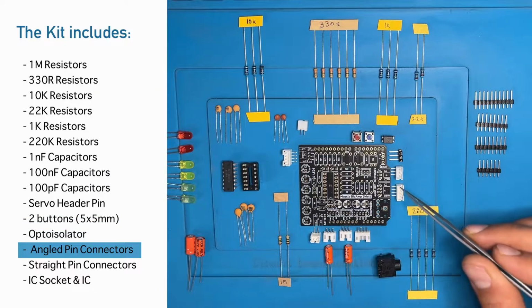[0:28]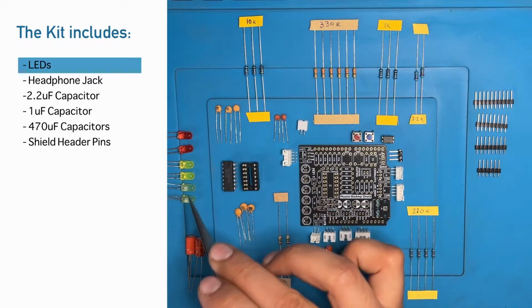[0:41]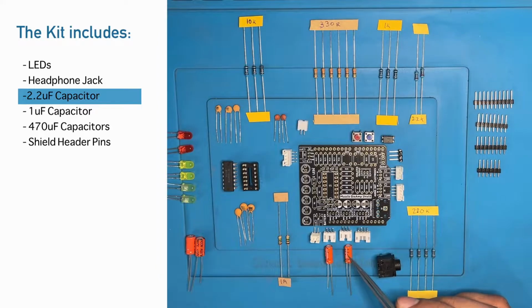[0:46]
We also get the two tactile switch buttons, red and blue, opto isolator, angled 3-pin, 4-pin, and 2-pin. After that we get straight pin, 2 3-pin, 1 4-pin and 1 2-pin connector here. We also get the IC socket and IC, 6 LEDs, 1 headphone jack. In capacitor we have 2.2 uF capacitor, 1 uF capacitor and 2 470 uF capacitor. At the end we also get the shield header pins.
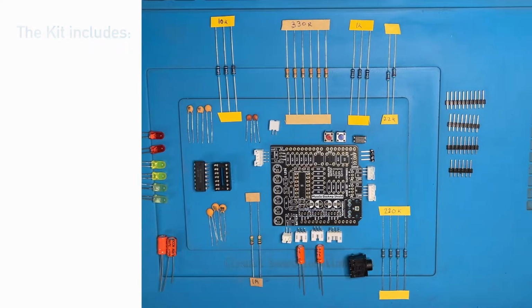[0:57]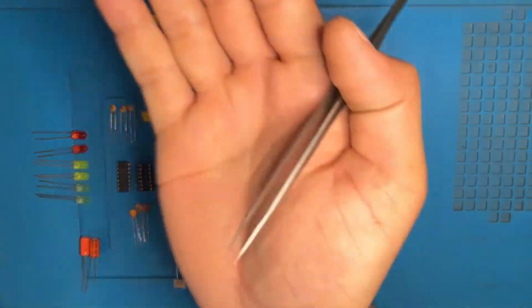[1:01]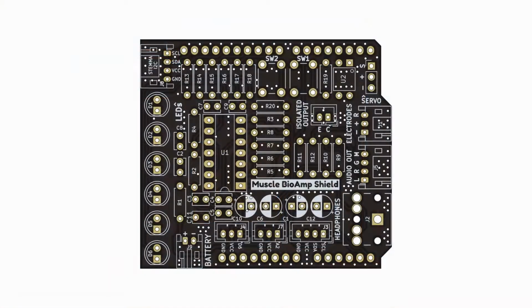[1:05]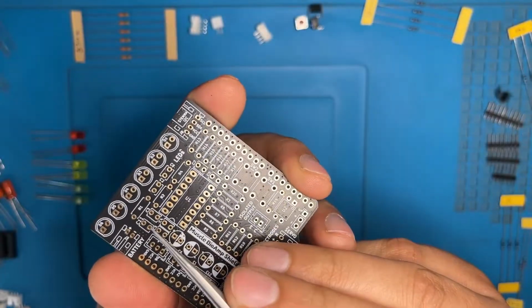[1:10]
So now we have seen what we'll get in the kit. Without further ado, let's get started. So first we have 1M resistor in our hand. The location on the PCB is R1 and R2. Here we have R1 and R2.
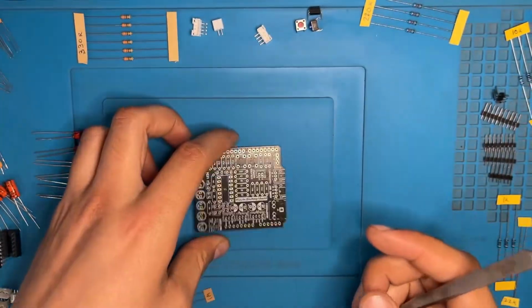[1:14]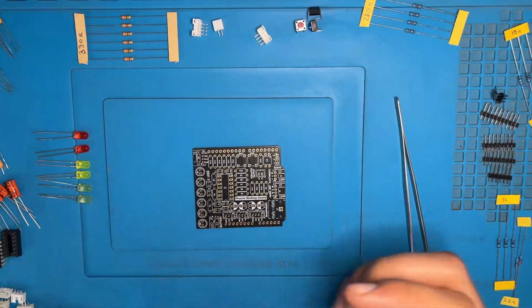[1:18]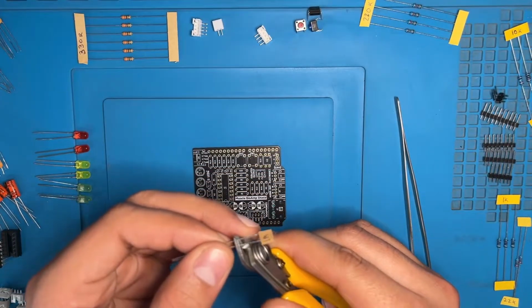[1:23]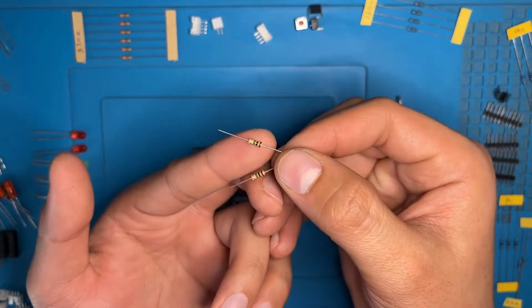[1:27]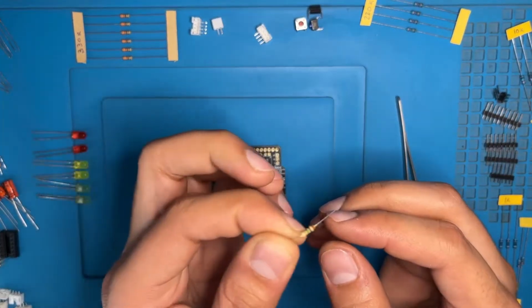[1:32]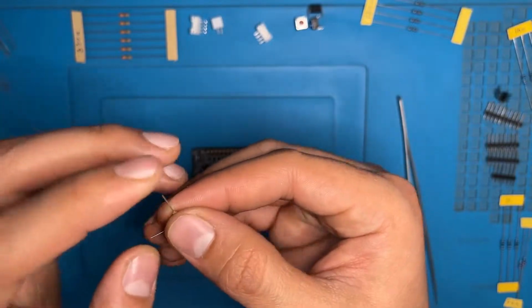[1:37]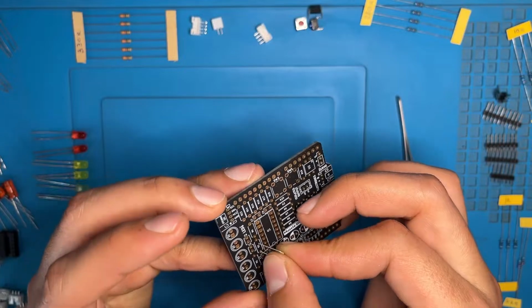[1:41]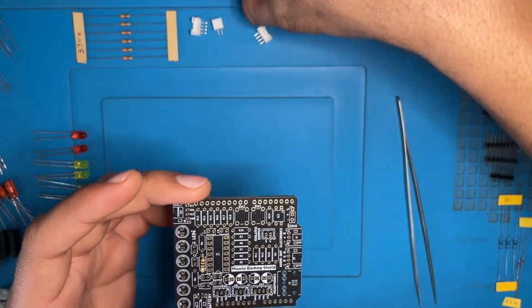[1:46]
Now take the resistor in one hand and a cutter in the other hand. Carefully cut the extra pins and put them aside from the workstation so they will not fall off here and there. This is how it will look. From the edge of the resistor, pull the pin inside like a 90 degree angle. This is how it will look, and do the same from the other side of the pin also. After this, insert it in the location R2. Do the same with the other resistor also.
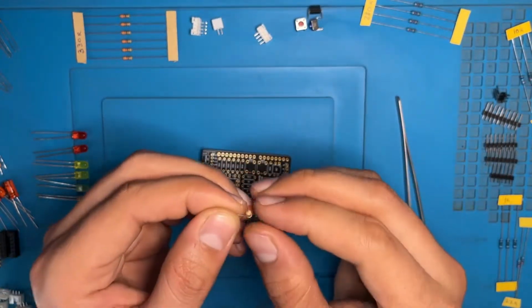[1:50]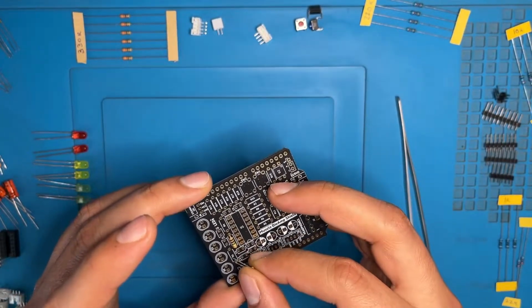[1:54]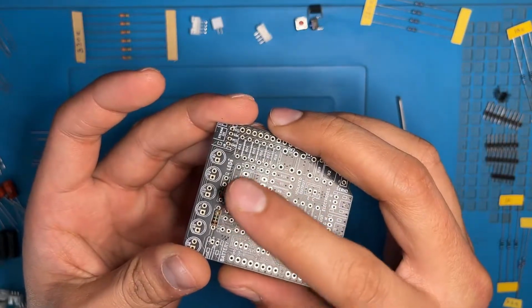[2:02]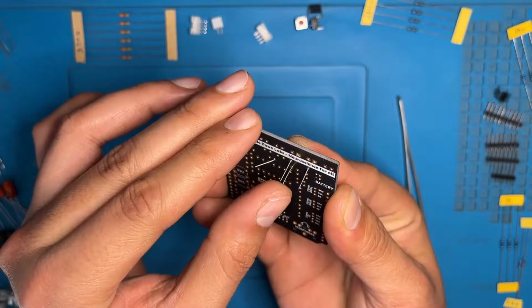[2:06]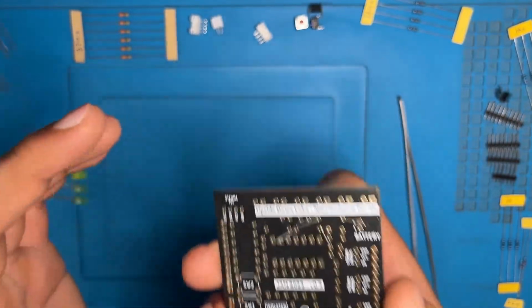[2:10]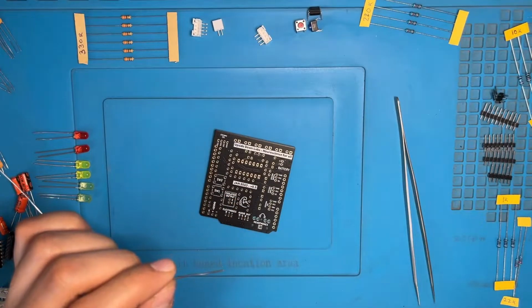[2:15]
Turn the pins inside from both sides. Put them in the other location R1. After this, place your finger on the resistor like this and turn the PCB upside down and pull the pins apart. This will help you to prevent your resistor from falling from the PCB. Solder your components in the adequate amount of solder. Do not injure yourself.
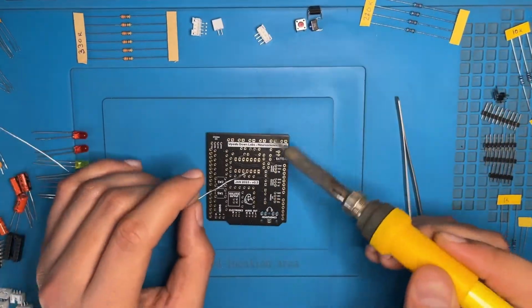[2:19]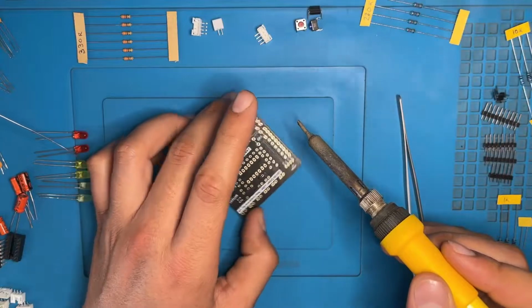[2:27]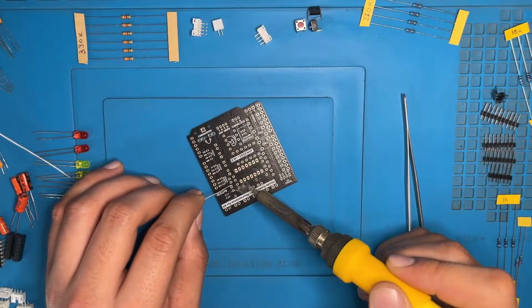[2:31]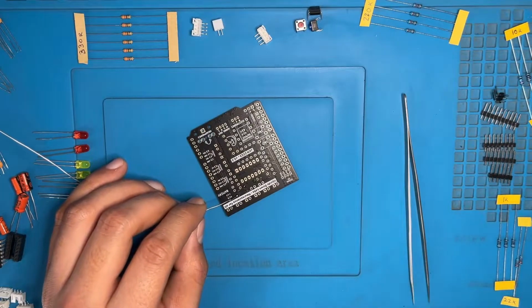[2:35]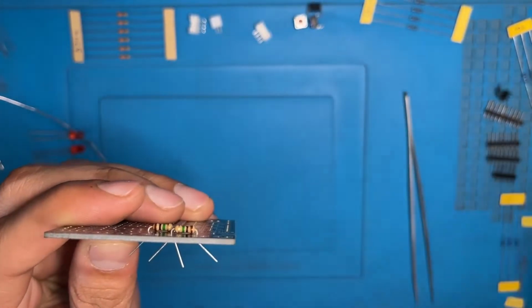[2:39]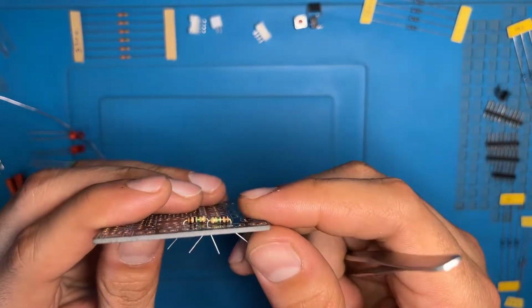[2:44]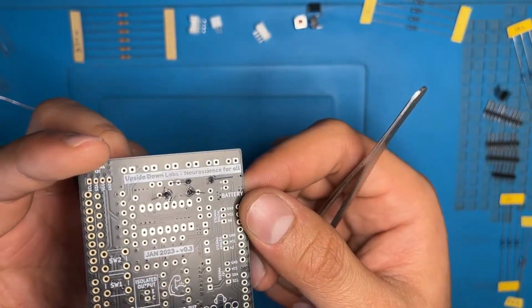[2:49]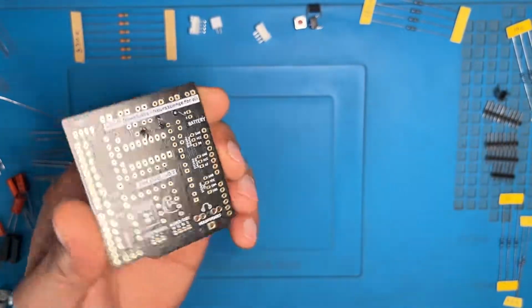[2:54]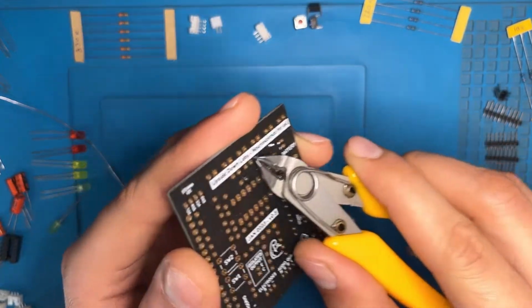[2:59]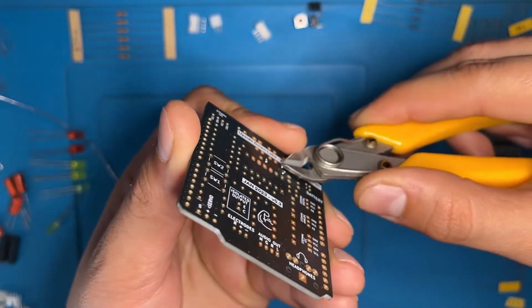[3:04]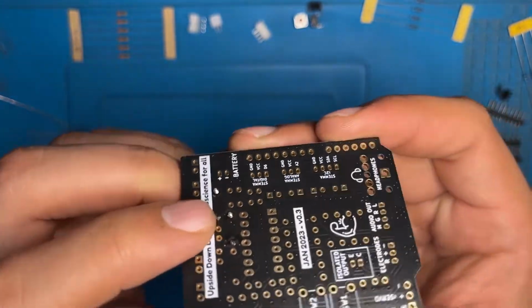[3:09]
After soldering, you can see that there is no gap in between the resistor and the PCB. My tweezer is also not able to enter from it. This is how the proper soldering should be done. After this, pull the pins inside and taking the cutter in the other hand, carefully cut the extra pins from your PCB. Now you can see I have placed my clipper on the base of the PCB and cut the extra pins carefully. It is so neat and clean.
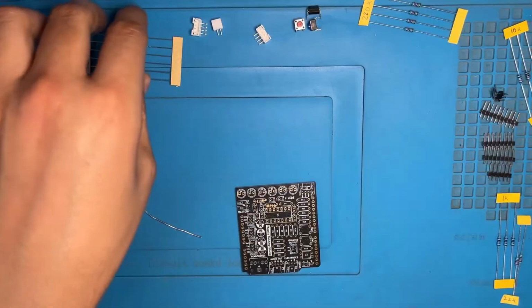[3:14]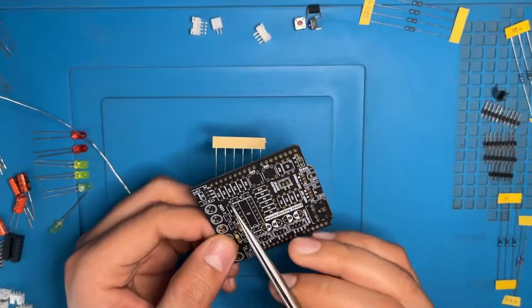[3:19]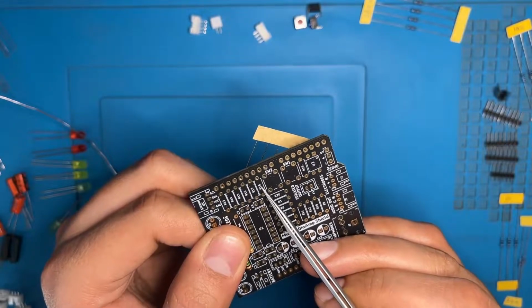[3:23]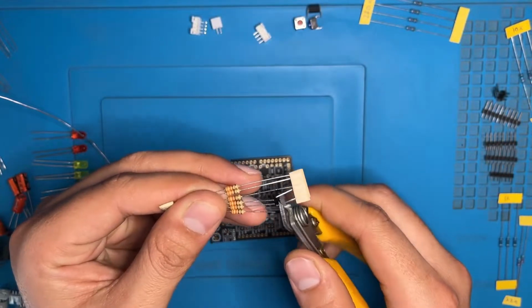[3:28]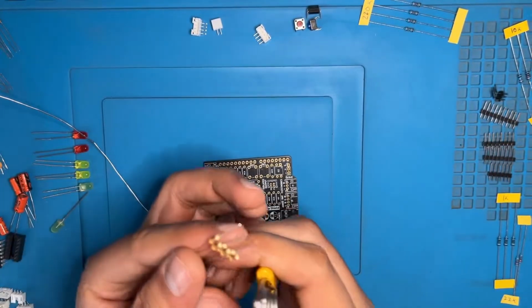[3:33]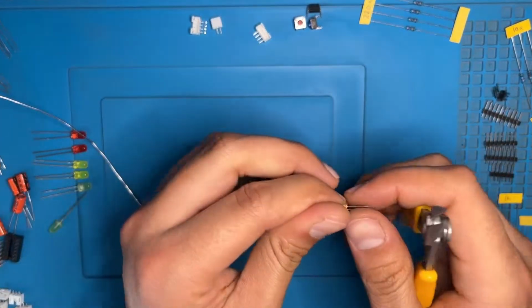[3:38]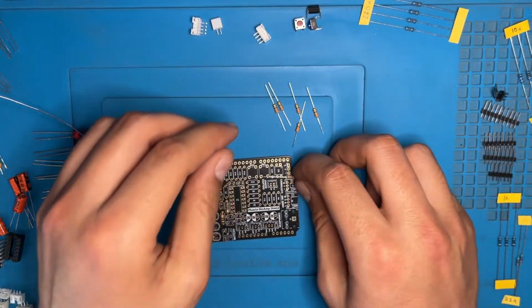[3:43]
Do the same. Now we have 330R resistor, R13 to R18: 13, 14, 15, 16, 17 and 18. Align the resistor like this and cut the extra pins from your clipper. Put the extra pins aside. Do the same from the other side also. As you can see, the pins are the same from both sides. Now fold the legs inside at 90 degree angle as we did on the 1M resistor.
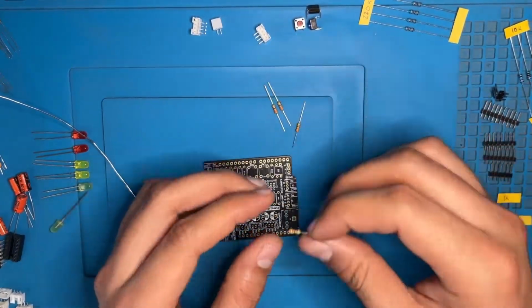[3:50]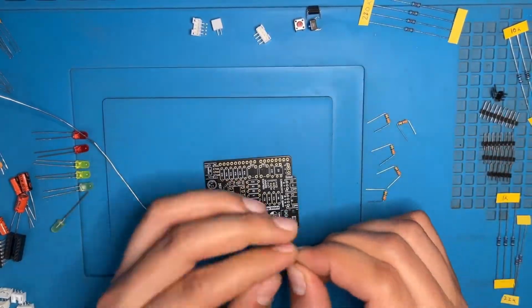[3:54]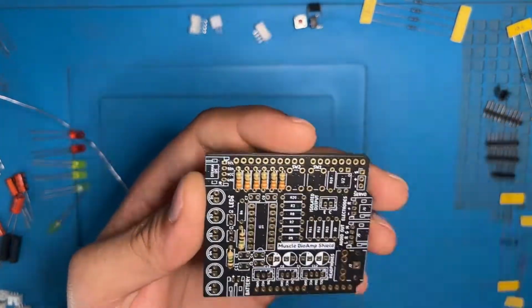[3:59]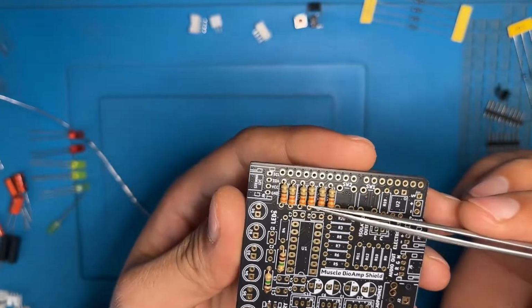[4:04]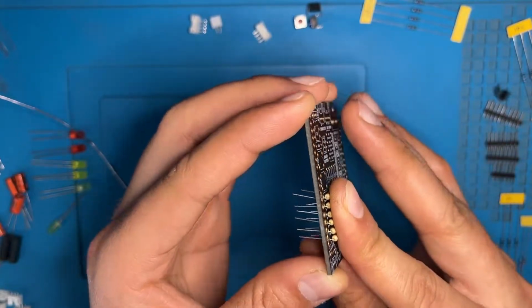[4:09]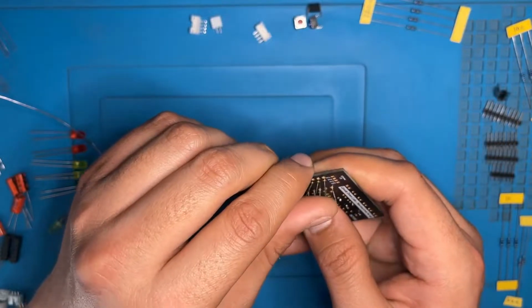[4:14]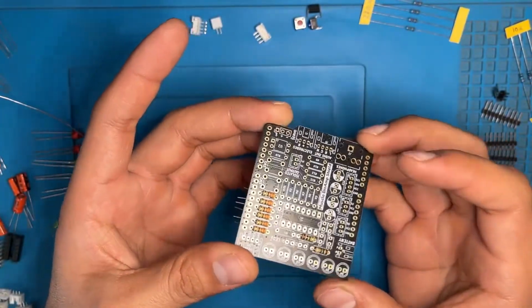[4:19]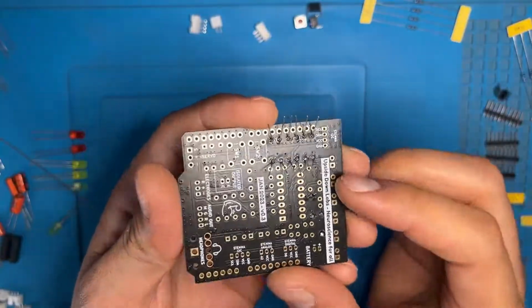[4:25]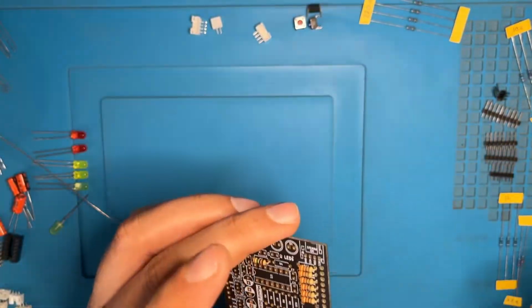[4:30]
After this we will put resistors in the location. Just to make it look nice, you can align them in the same color coding. As you can see here, place your finger upon them and turn the PCB upside down. Pull the pins apart. As you can see, they are not able to fall off. Now carefully solder your components. Take the clipper and cut the extra pins. Now we have cut the pins and this is how it will look.
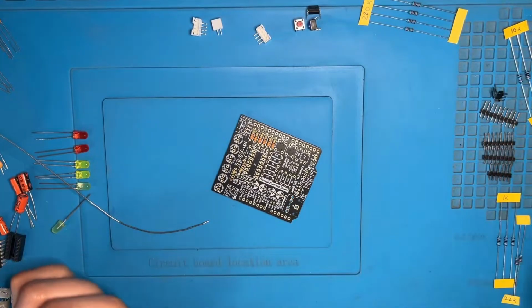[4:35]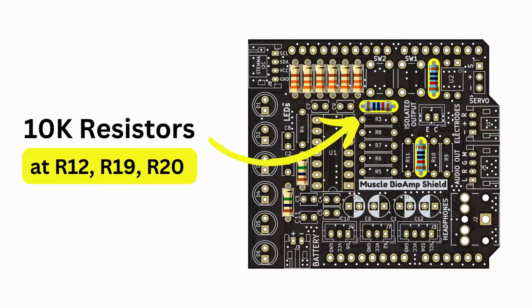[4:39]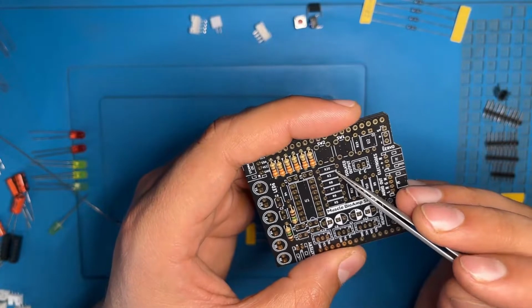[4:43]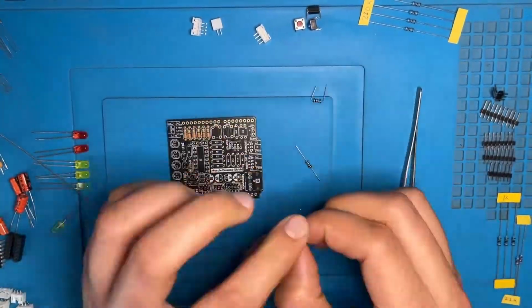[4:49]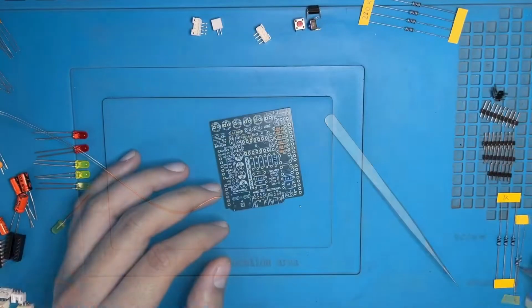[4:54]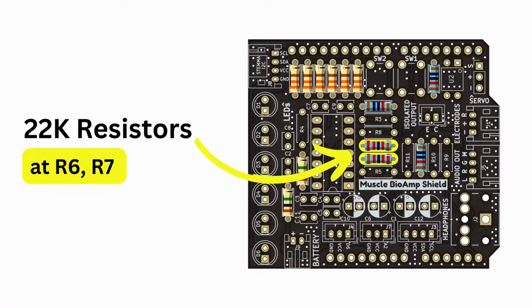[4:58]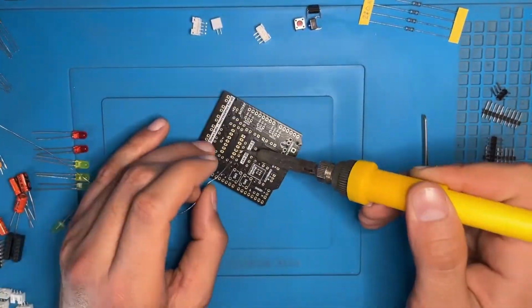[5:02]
Now we have the 10K resistor over here. The locations are R12, R19 and R20. On the PCB we see R19, R20 and R12. Here we are doing the same process. Here we have 22K resistor. The locations are R6 and R7 on the PCB. As we did to the other resistors, the same process we will do on these resistors also.
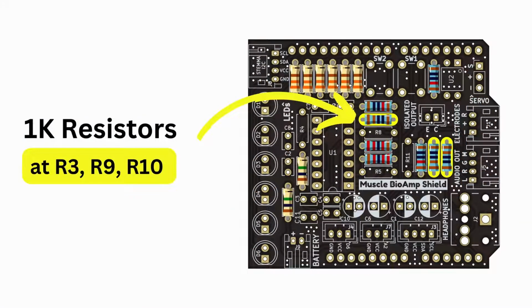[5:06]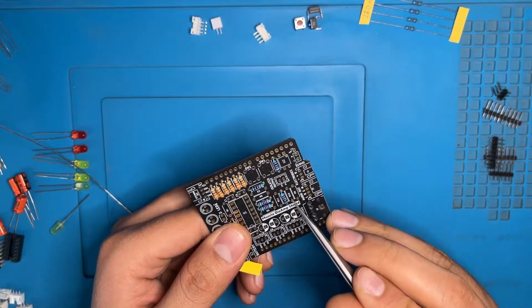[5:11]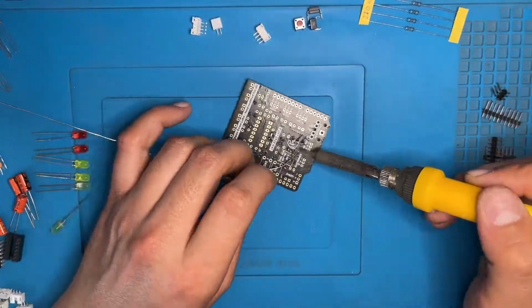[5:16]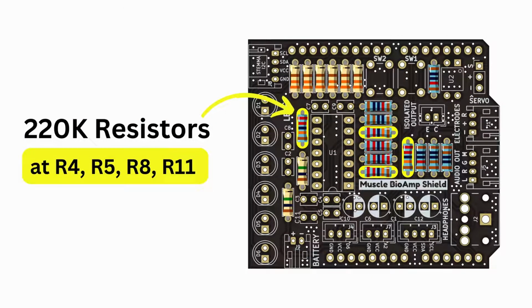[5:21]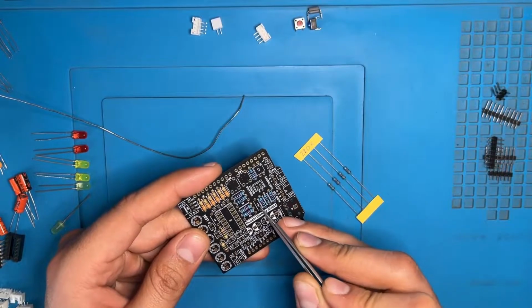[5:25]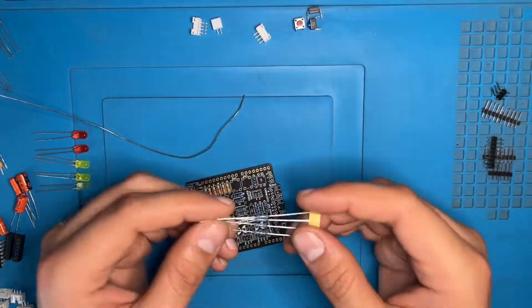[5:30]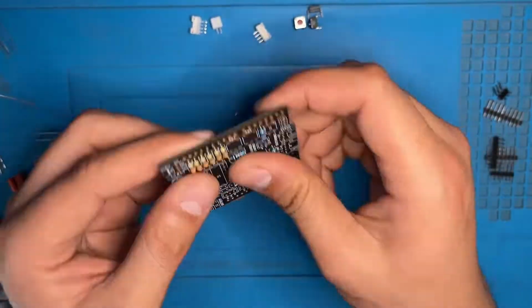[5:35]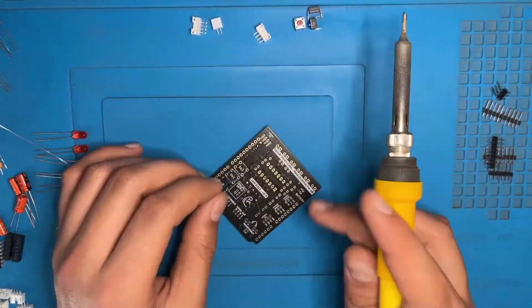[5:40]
Here we have 1K resistor. The locations are R3, R9 and R10. Here we have R9, R10 and R3. Now we have 220K resistor. The locations are R4, R5, R8 and R11. R8, R5, R11 and R4. Now we have to do the same process again, the inserting, soldering, cutting, all this process takes time, but at the end it will be worth it.
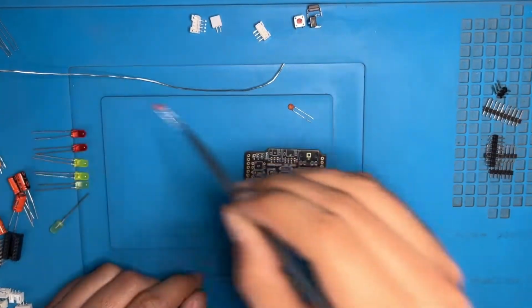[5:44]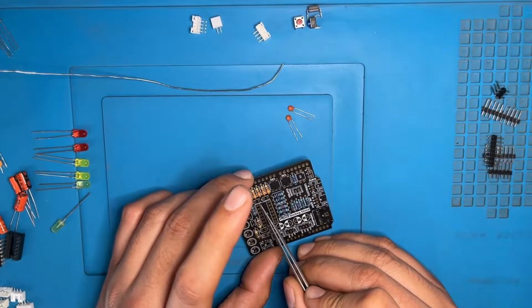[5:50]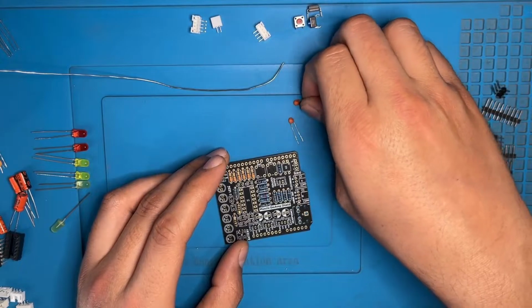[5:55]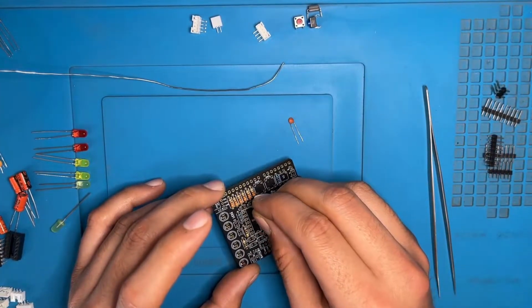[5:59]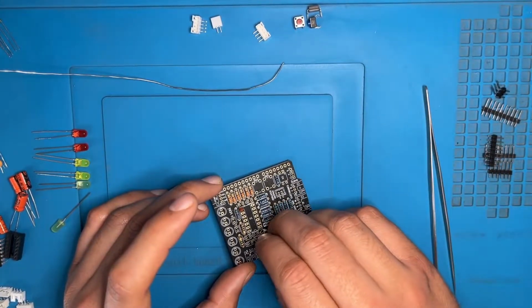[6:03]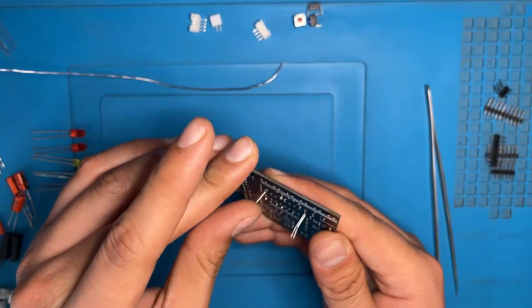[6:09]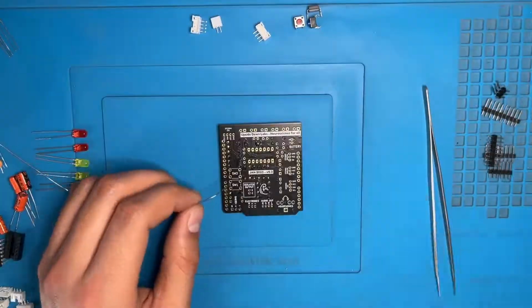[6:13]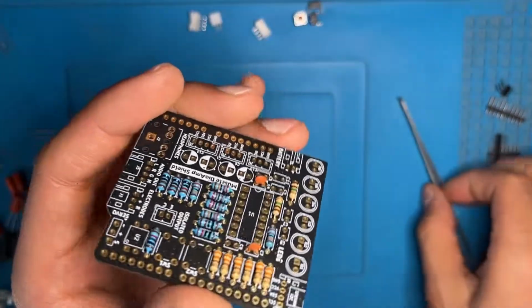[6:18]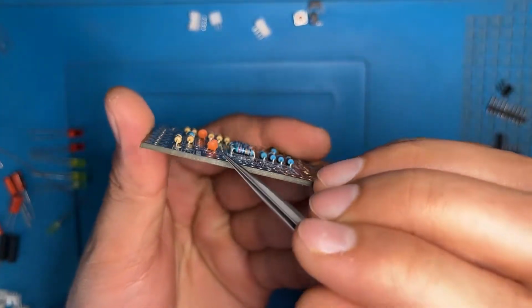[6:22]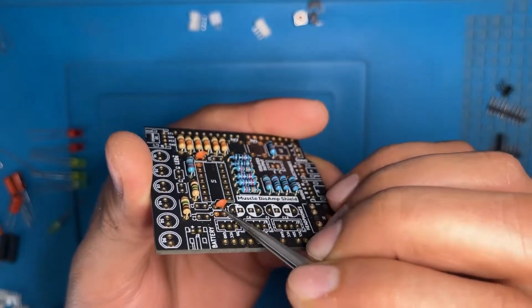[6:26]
After this, now we will start with the capacitors. The smallest of them are 1nF. The locations are C4 and C7 on the PCB. The pins are already straight, so you don't have to pull them. After inserting the capacitors, place your finger upon them and turn the PCB upside down. Pull the pins apart and now the components will not fall, then solder them. You can see that there is no gap between the PCB and the capacitor. This makes your PCB assembly look clean.
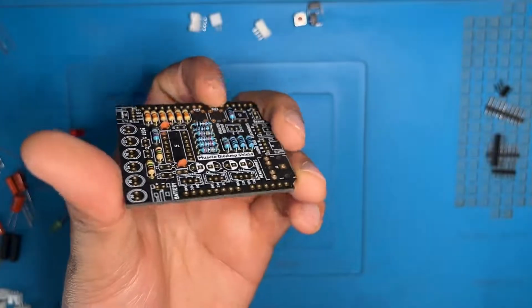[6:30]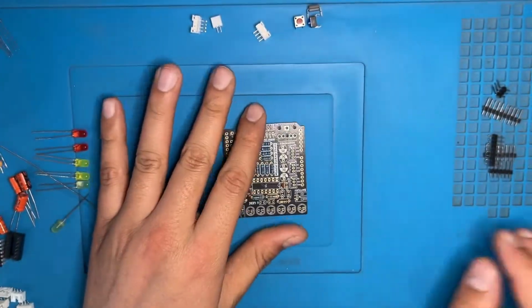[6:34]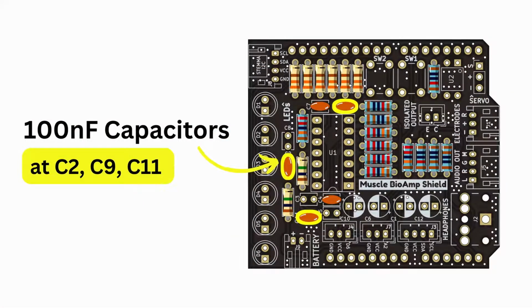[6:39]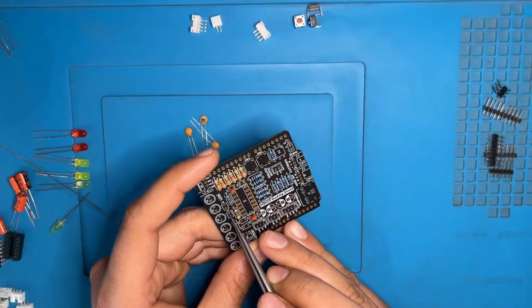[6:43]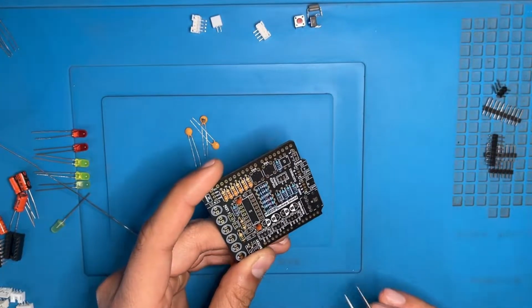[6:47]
To identify this capacitor, you can see the numbering on it. The numbering on it is 102. Now we have 100nF capacitor. The locations are C2, C9 and C11. The numbering on the capacitor will be 104. Now we'll insert the capacitors and solder them.
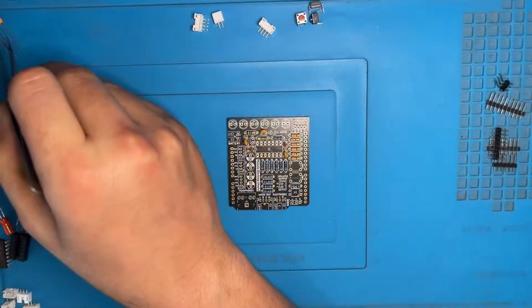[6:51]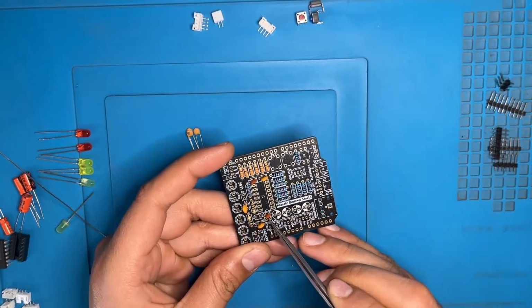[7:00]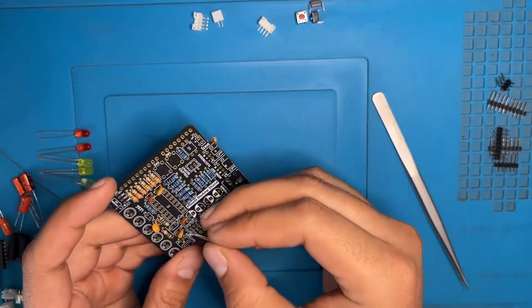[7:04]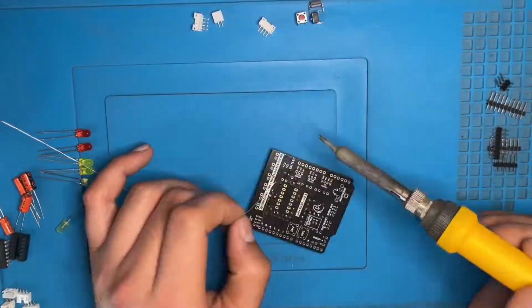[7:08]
Here we have the 100pF. The locations are C3, C5 and C8. The numbering on the capacitor is 100. Now we are doing the same thing again and again, inserting and soldering.
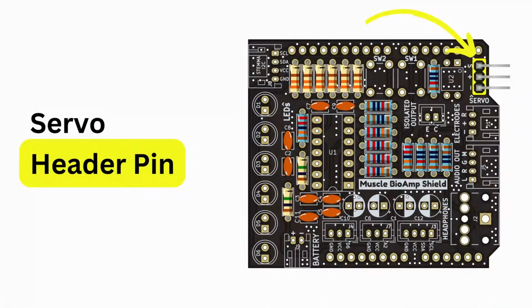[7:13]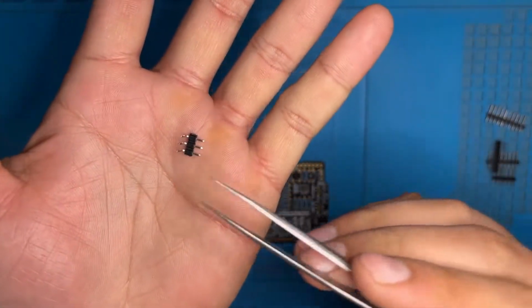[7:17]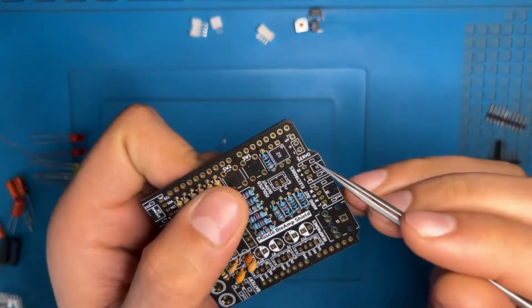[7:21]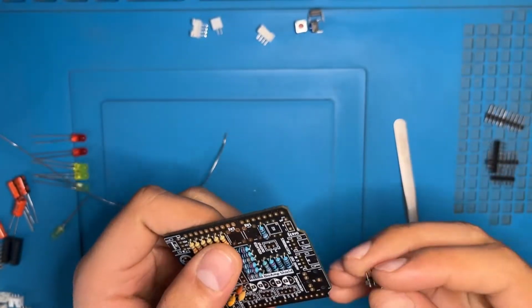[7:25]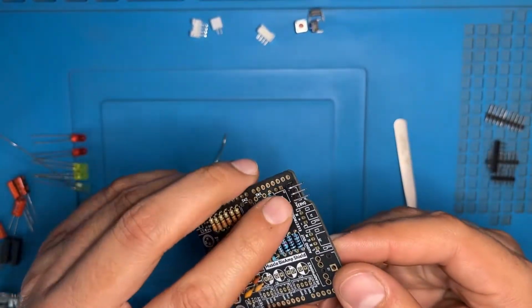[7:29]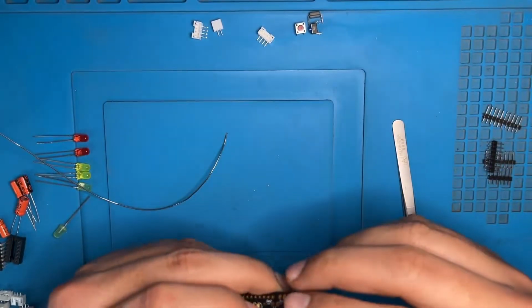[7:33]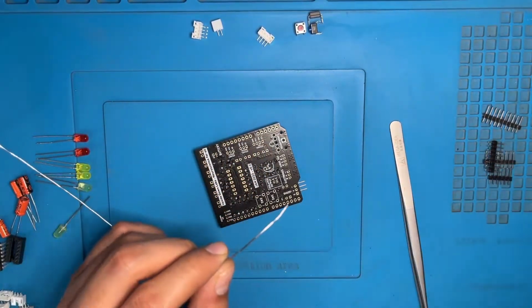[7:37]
Now we have the servo header pin. This is used to connect your servo motor to the PCB. Hold your PCB in your hand. Insert the servo header pin like this. The longer leg should be outside. Place a finger on the black part and turn the PCB upside down. Solder only the middle leg of the servo header pin.
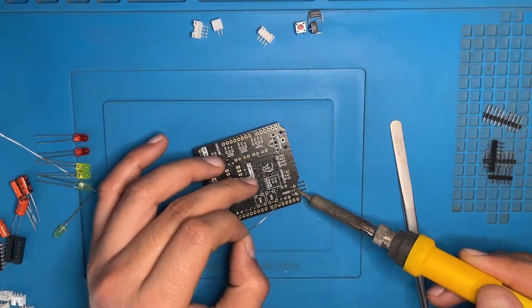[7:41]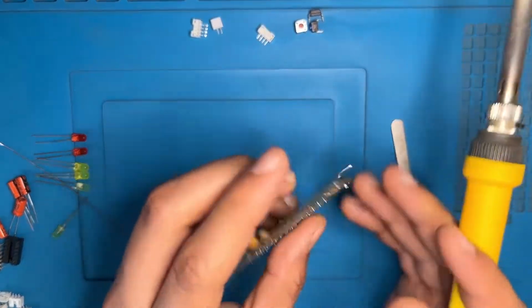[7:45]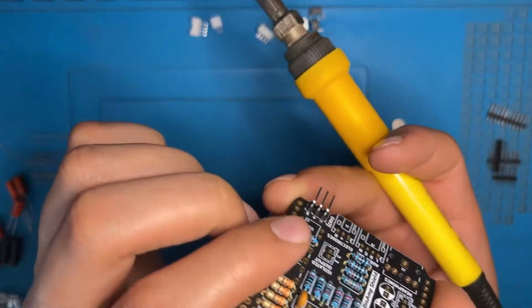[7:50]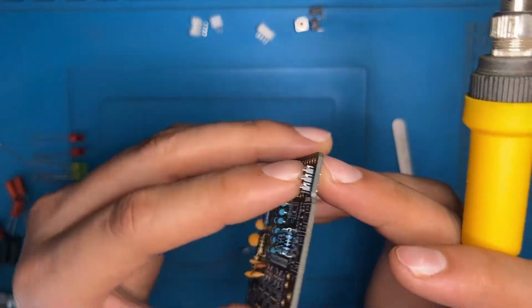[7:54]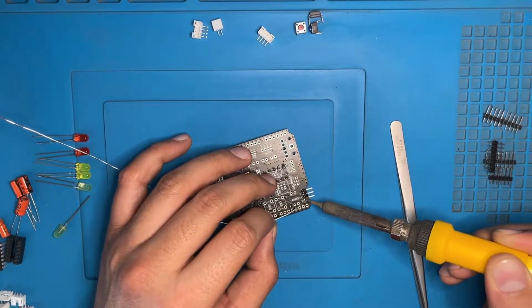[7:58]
After soldering, you can turn it upside down again. You can check that the header pin is intact properly. If it is not, you can re-solder the center pin and place it in the proper place. After you have confirmed the location, you can solder the other two pins also.
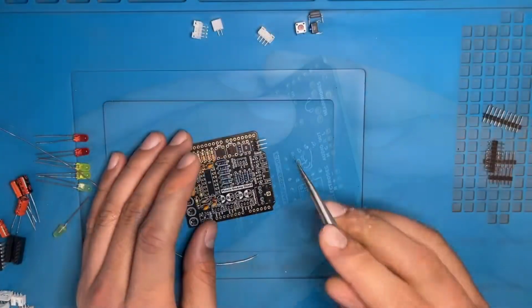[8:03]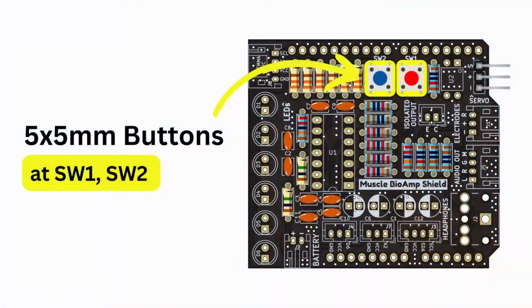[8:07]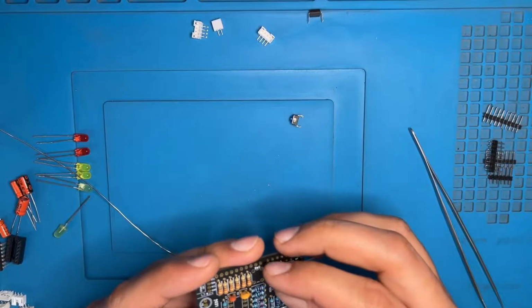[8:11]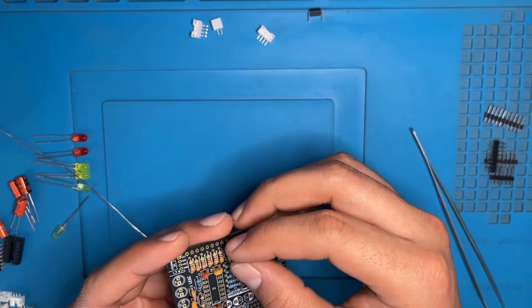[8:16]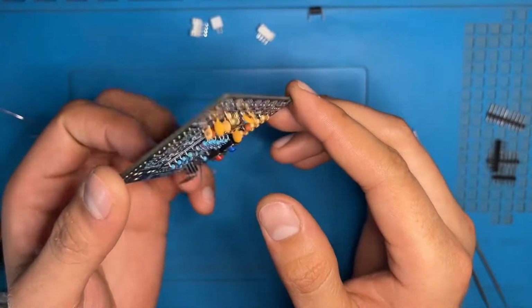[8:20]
Now we have the tactile switch, red and blue. The locations are SW1 and SW2. Put the red button on the SW1 location over here, and do the same with the blue one on SW2.
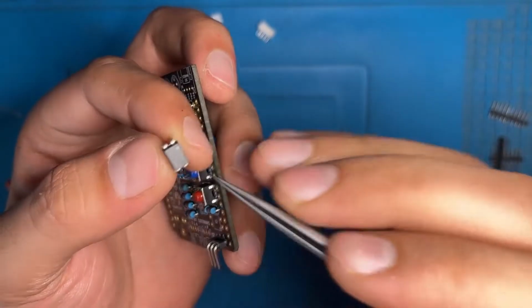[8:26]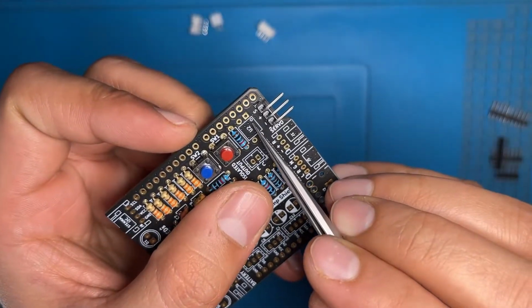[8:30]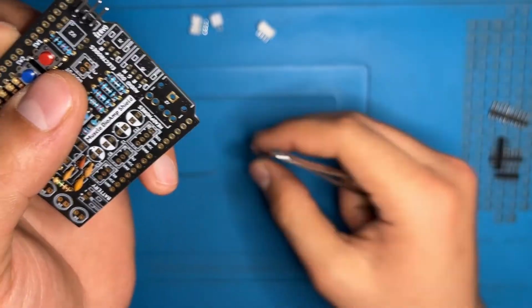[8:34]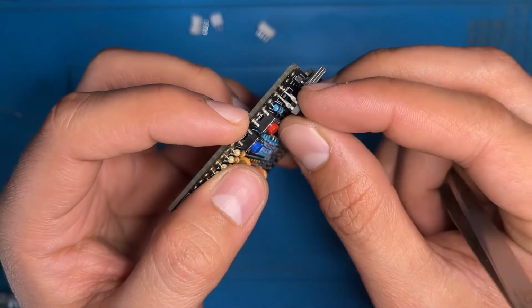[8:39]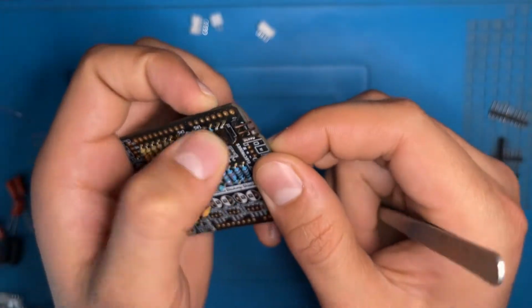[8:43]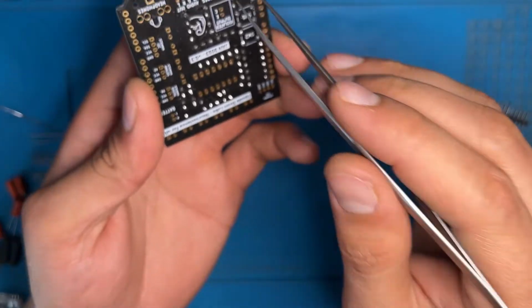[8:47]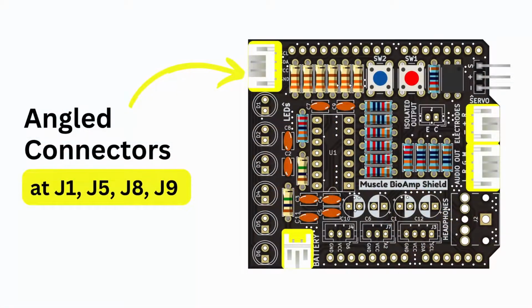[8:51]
Here we have the optoisolator. The location is U2. You see the notch over here and the notch on the design of the PCB over here. Remember that you place your optoisolator in the same direction as the notch on the PCB. Insert your optoisolator like this. After this, turn your PCB upside down and again solder it.
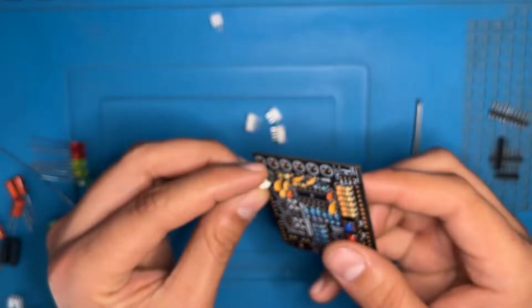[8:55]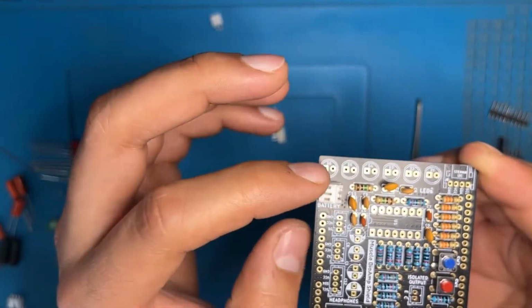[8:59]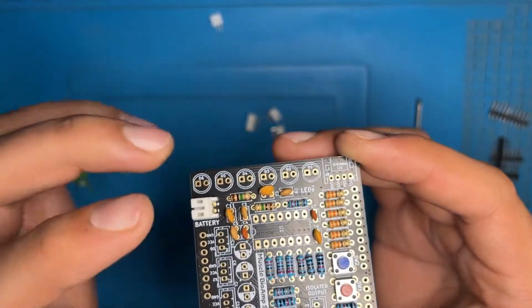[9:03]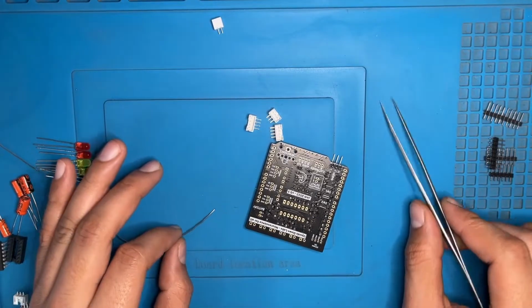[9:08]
Now we have the angle connectors. The locations are J1, J5, J8 and J9. First we are taking the 2-pin connector. Without soldering, you can see that the design on the PCB is to be the same as the connector. After turning the PCB upside down, solder 1 pin of the 2-pin connector.
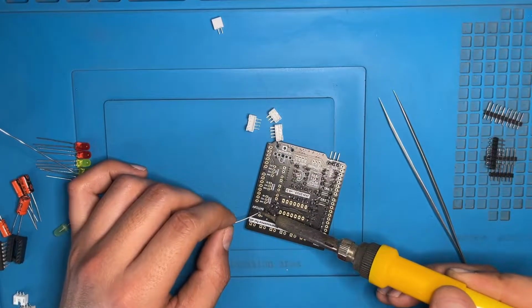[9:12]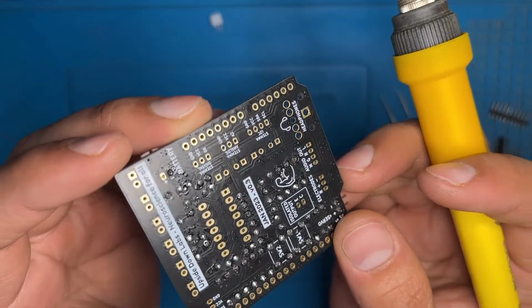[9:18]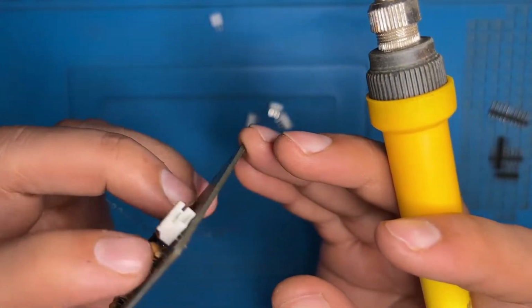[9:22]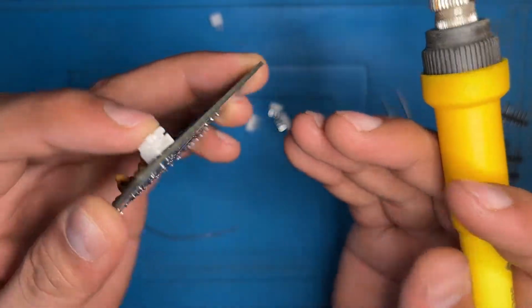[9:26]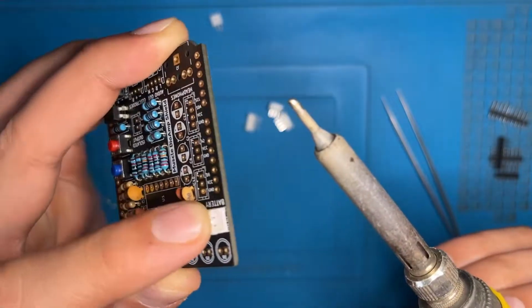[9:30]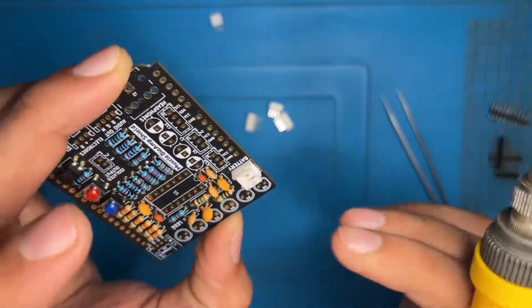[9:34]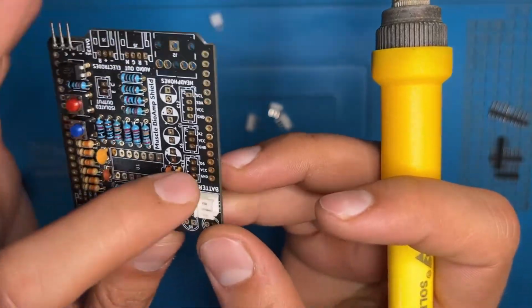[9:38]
Now you can check that the connector is soldered in the right direction. But here it is having a problem, so you can place a finger gently and press it inside. Remember that first you have to heat up the solder and after that place your finger and press it inside, otherwise the connector will be damaged. When you have assured that you have placed your connector properly, you can solder it.
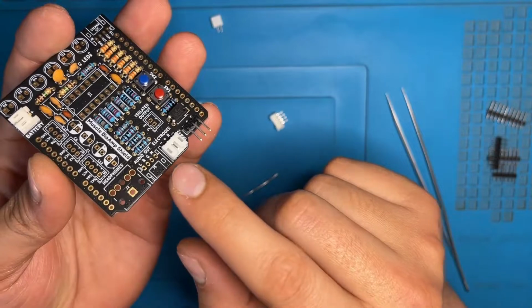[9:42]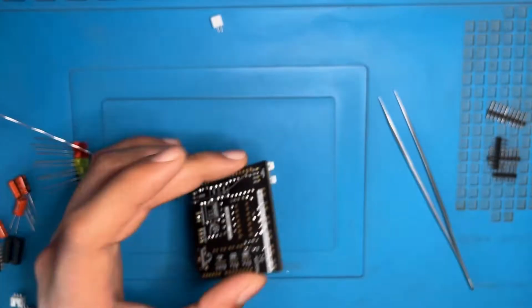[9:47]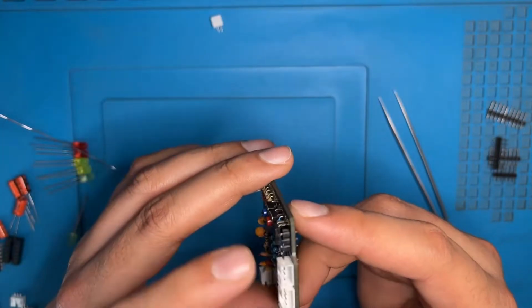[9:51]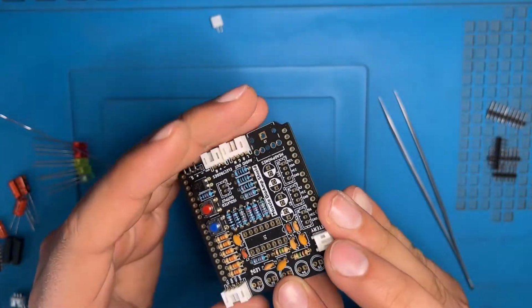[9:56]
Now we are doing the same for the 3-pin and 4-pin. Here we have completed the angle pin connectors. After soldering all the angle connectors, you can check thoroughly that the design and the connectors on them are placed in the same alignment.
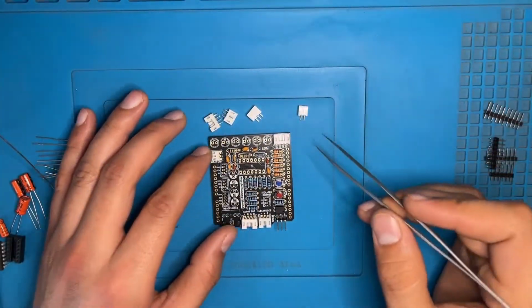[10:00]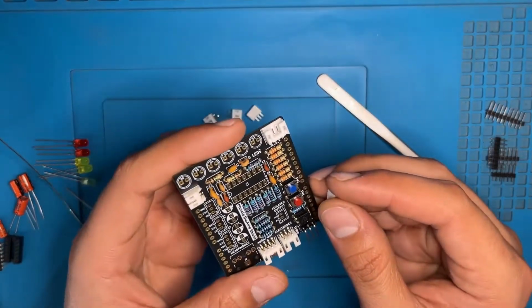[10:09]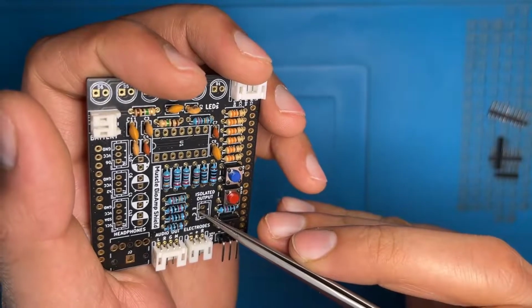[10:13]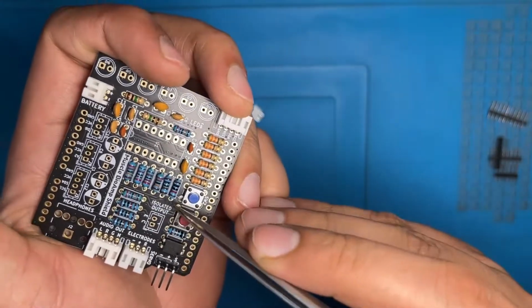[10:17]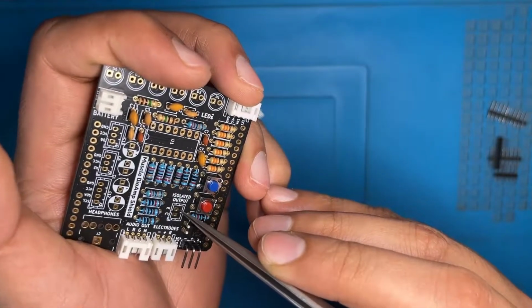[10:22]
Here we have the straight pin connectors. Locations are J3, J4 and J7. First we are taking the 2 pin. For the direction, you can check that the cut on the connector over here and the cut on the design of the PCB are to be in the same place. The back side is the plain side, like you can see here, and the front side is having cuts on the design, you can see here.
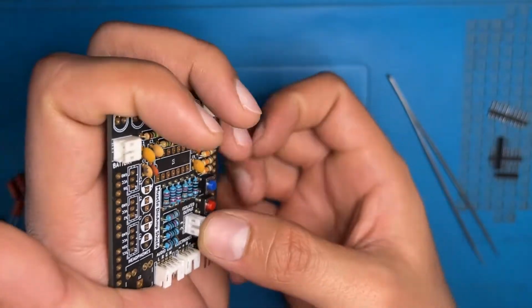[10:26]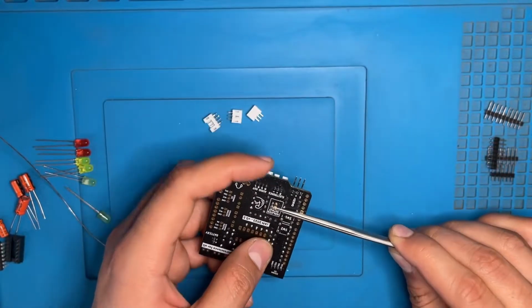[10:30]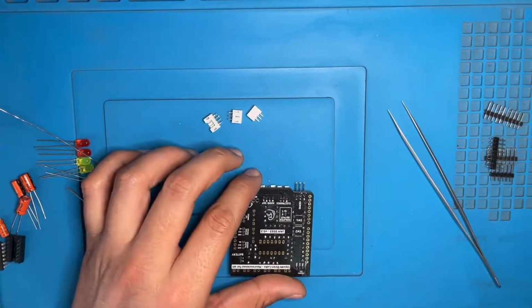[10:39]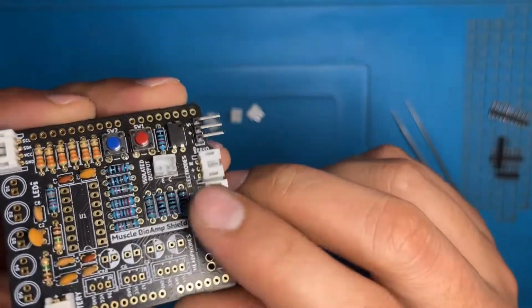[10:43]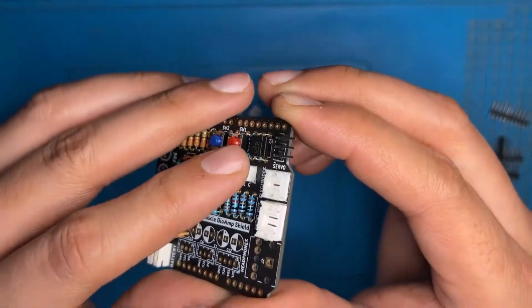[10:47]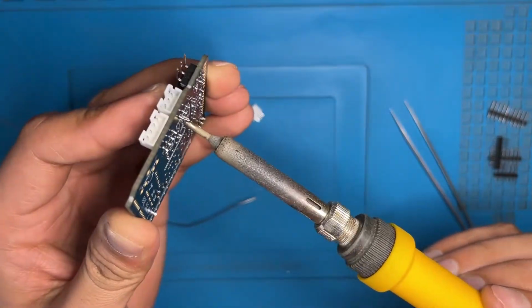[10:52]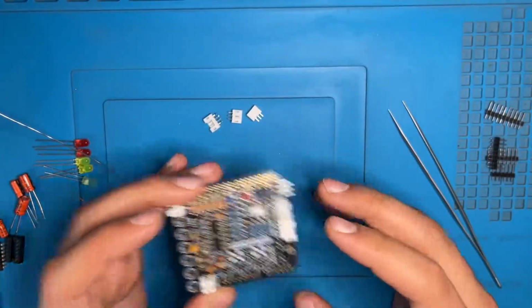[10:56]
After doing this, place a finger upon it and turn it upside down. Hold it with a tweezer and place it on your workstation. Solder one pin of your connector. After soldering, you can turn it upside down and check whether the alignment is properly done or not. Here we are seeing that it is not aligned properly. So to do it properly, you can re-solder the first pin that you soldered and twist it to the side that was misaligned. Now we have soldered the 2 pin.
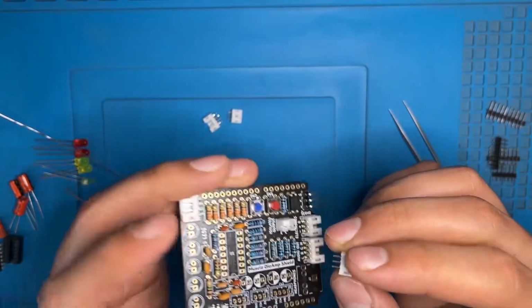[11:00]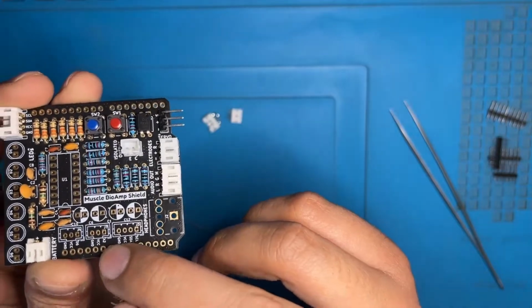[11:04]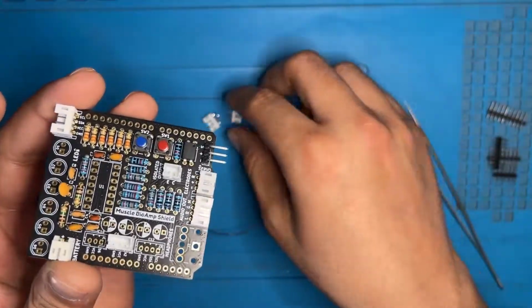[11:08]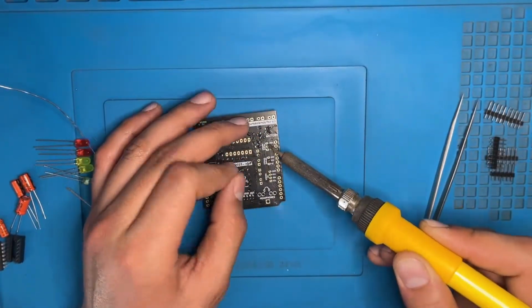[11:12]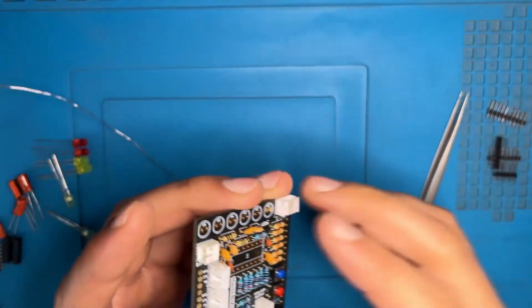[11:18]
The same is the direction for 3 pin and 4 pin. The cut mark on the connector and the cut mark on the design should be the same. Insert the connectors in the PCB. Now place a finger and turn it upside down. Solder only the middle pin of the connector. After checking that there is no misalignment, you can solder the other pins also.
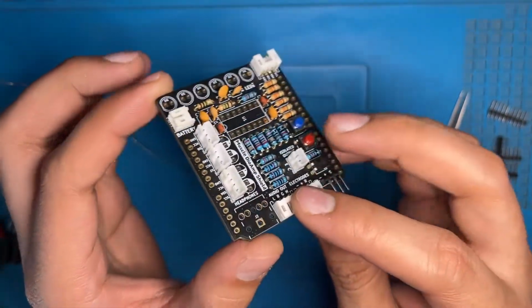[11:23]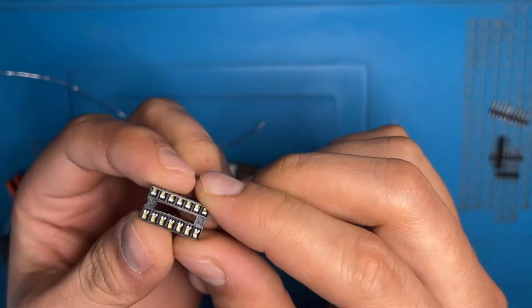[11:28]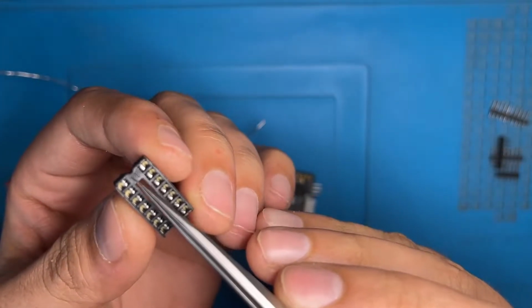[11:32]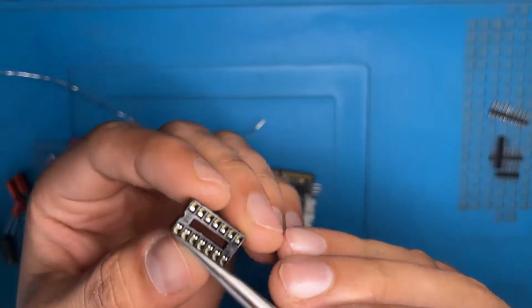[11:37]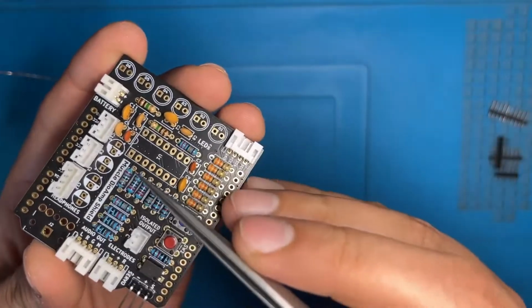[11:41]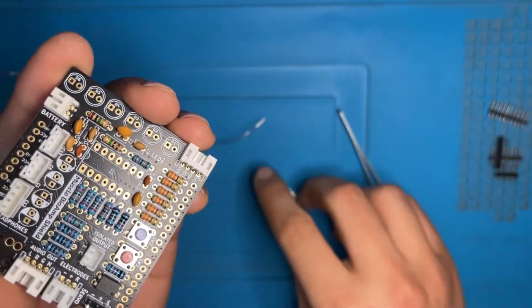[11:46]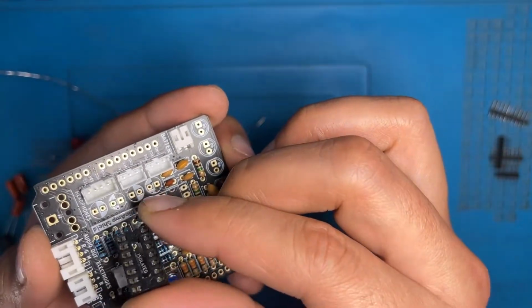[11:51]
Now we have the IC socket. The location is U1. Here you can see the IC socket. Over here, there is a small notch on the top side of the IC socket. This is used to check the direction of the IC that is to be inserted in your PCB. Over here you can see like this. The design on the PCB is having a notch on the top side and plain on the other side. The same way you have to insert the IC socket. The notch side should be the same as the PCB.
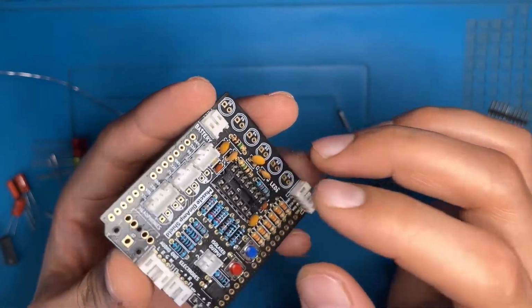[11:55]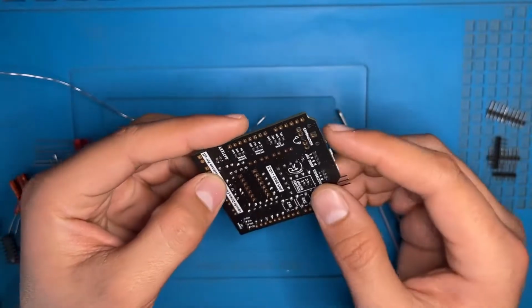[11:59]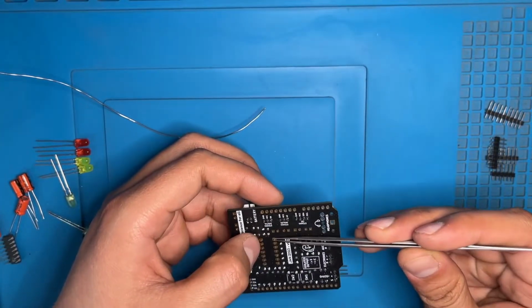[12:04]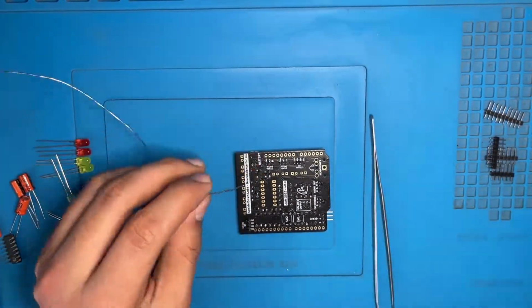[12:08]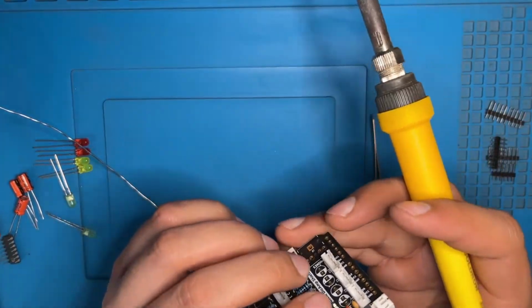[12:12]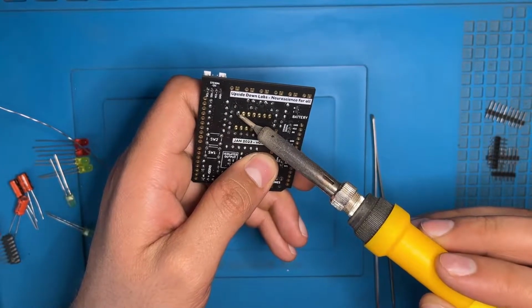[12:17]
Now place it in the direction. Place your finger upon it. Turn it upside down. Hold it with the tweezer because it will fall off. Now placing it on the workstation, you can solder the pins. Now solder only the 2 pins, the top right and the bottom left. Checking the alignment, you can re-solder the pins. After the confirmation, you can solder the remaining pins also.
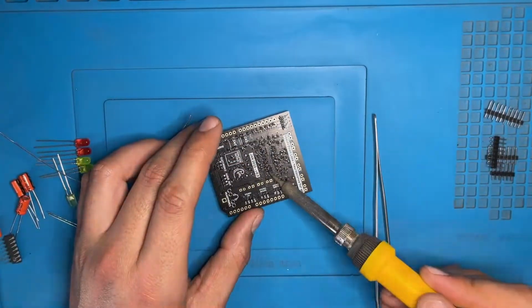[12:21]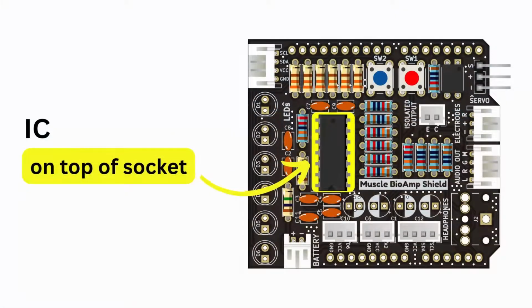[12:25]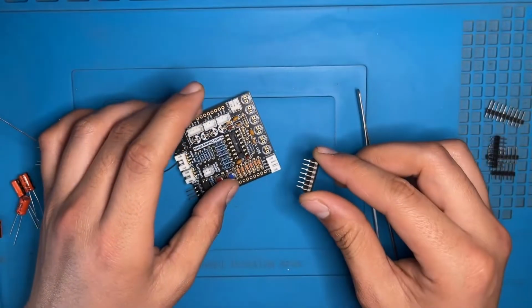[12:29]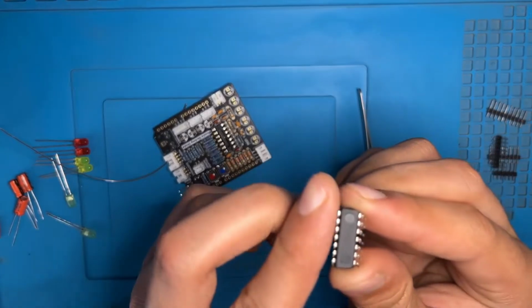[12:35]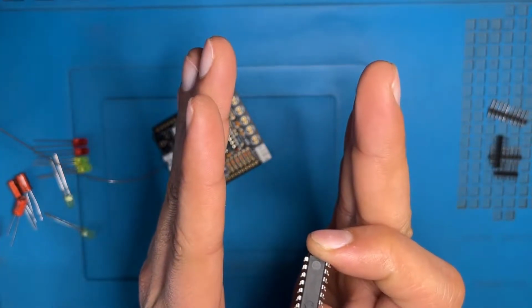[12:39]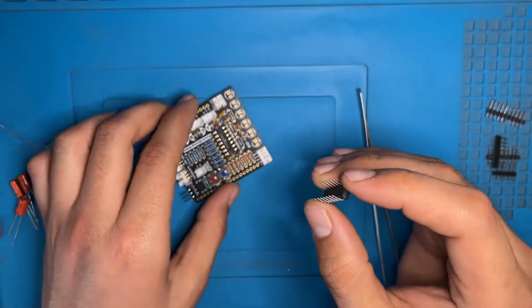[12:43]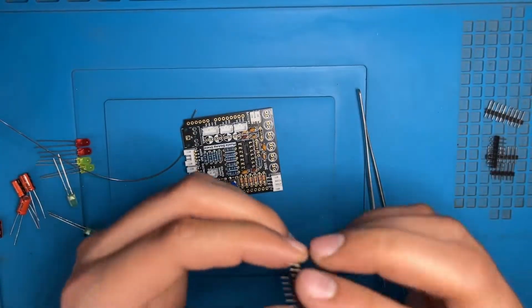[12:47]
Now finally, we are on the IC part. Hold your IC like this. Place it on the platform. Press gently on the inner side. This is to be done because the IC legs are outside like this. It has to be like this to be inserted in the socket, from outside to a 90 degree angle. Before inserting, check the notch on the IC and remember to do the same to the other pins also.
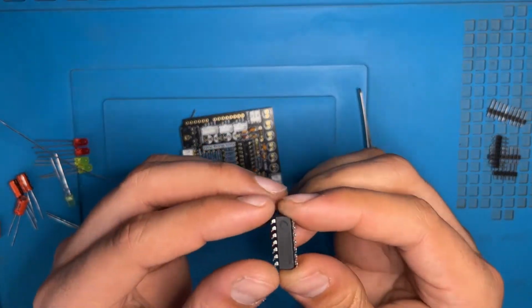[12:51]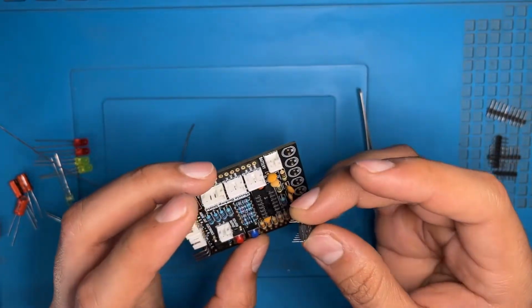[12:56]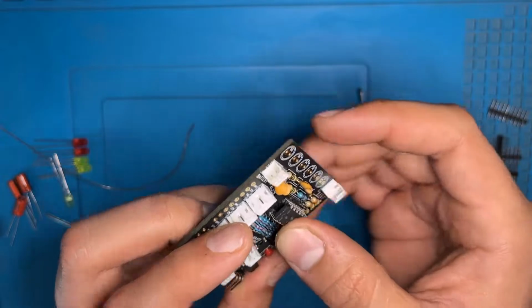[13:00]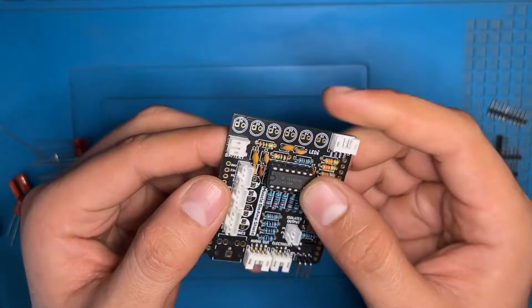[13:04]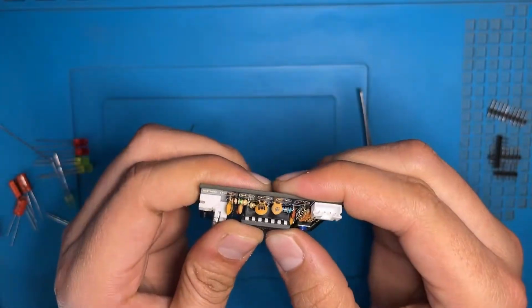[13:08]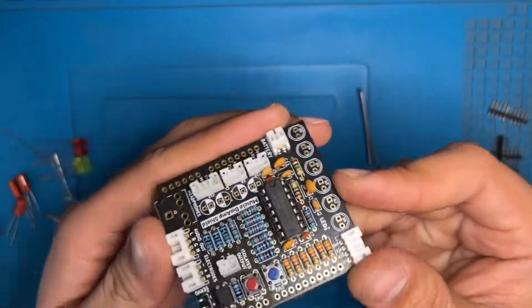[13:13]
After checking the notch on the IC socket and the IC, insert the IC in the socket and press it gently so as not to damage the pins. You can see that the IC has been placed properly. The design and the notch on the IC socket, the IC and the design on the PCB are the same.
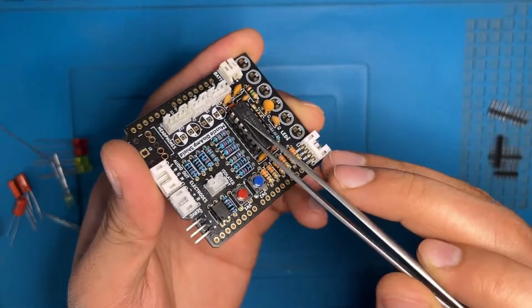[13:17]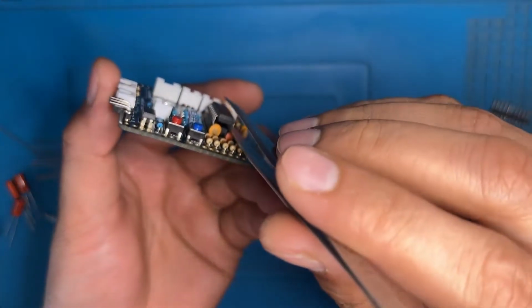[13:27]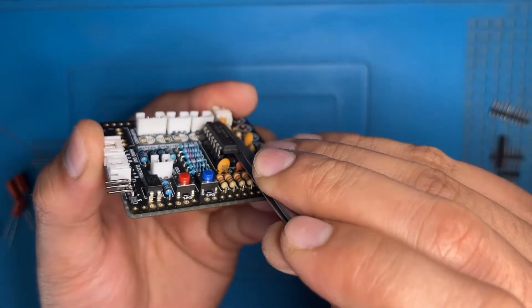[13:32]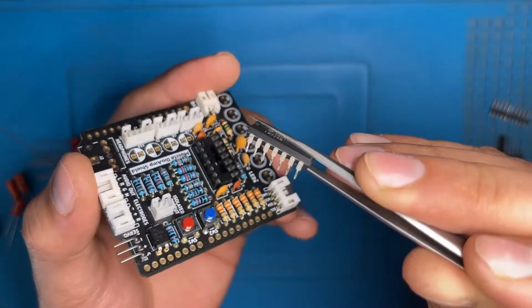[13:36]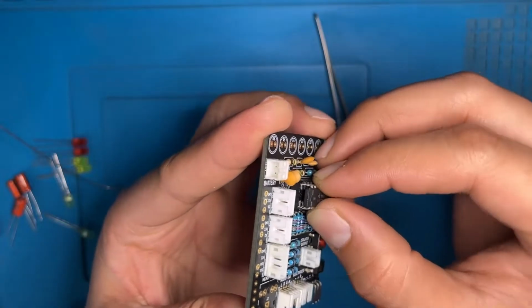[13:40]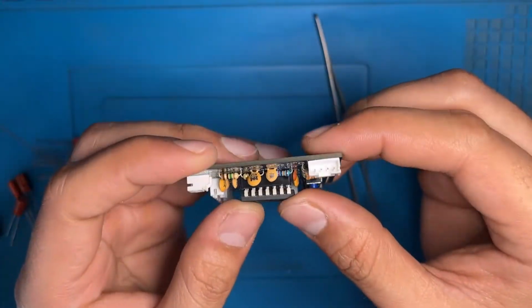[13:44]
For removing the IC, place your tweezer in between the socket and the IC like this and push it to the end of the IC. After inserting the tweezer, you can pull apart the IC from the socket and it will not damage the IC socket or the IC. Now here we have removed the IC from the socket. You can see that no pin has been damaged. Reinsert the IC in the socket again. Gently press it inside.
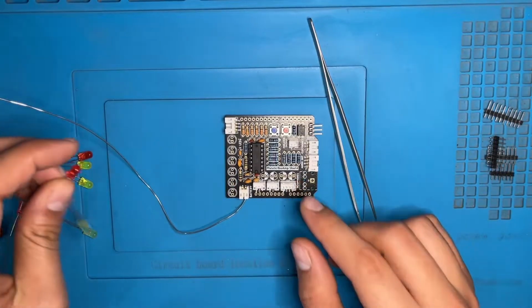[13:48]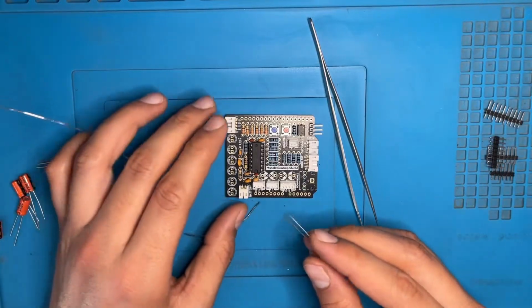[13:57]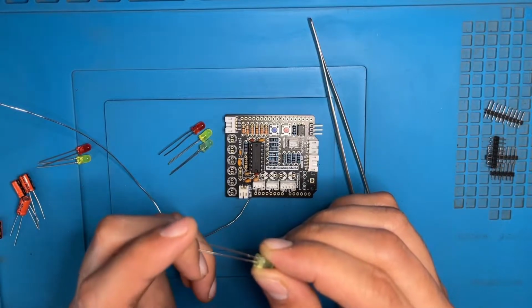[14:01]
Now we have the LEDs. The locations are D1 to D6. We have 6 LEDs, 2 red, 2 yellow and 2 green. For inserting, I am telling you the direction and the positive and negative. The longer leg is the positive and the shorter leg is the negative.
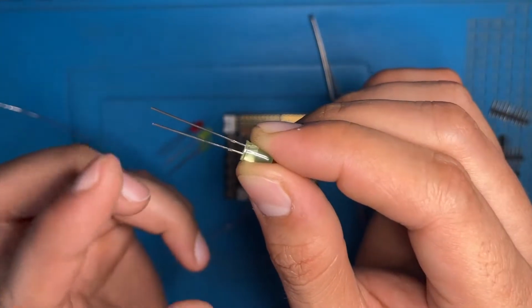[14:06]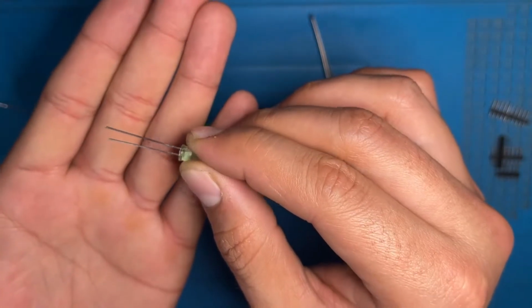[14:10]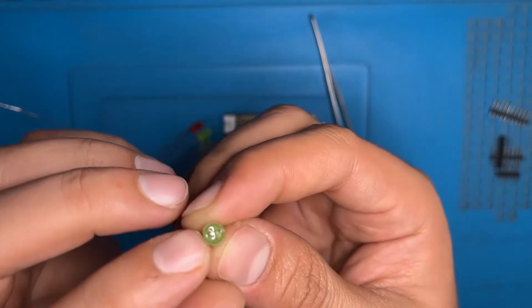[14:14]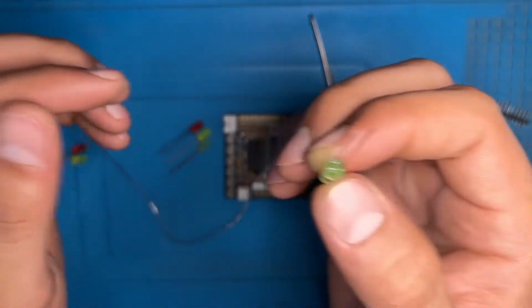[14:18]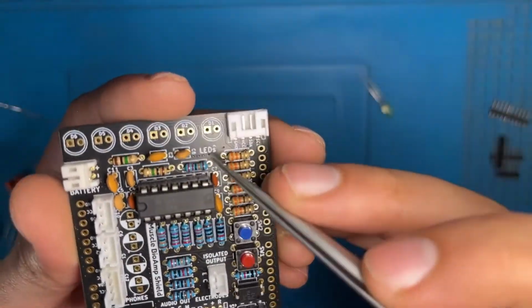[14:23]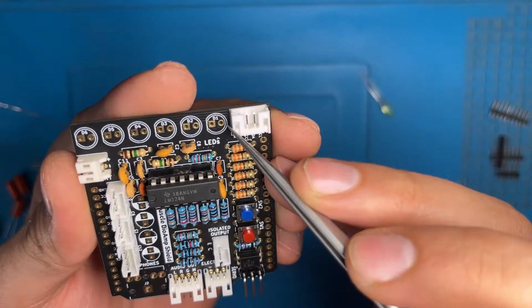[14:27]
Here you can see like this. This is the positive and negative. The other way to check the direction is the cut on the LED. The other side of the LED is round and the same is the design. Here you can see that the design over here is round and the front is cut. So the round side is positive and the cut side is negative.
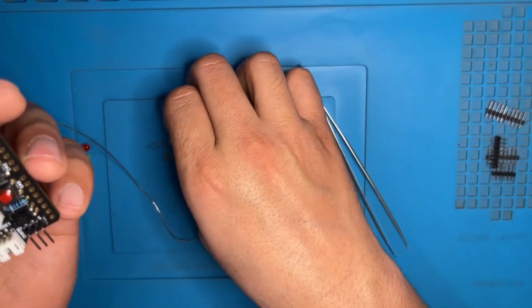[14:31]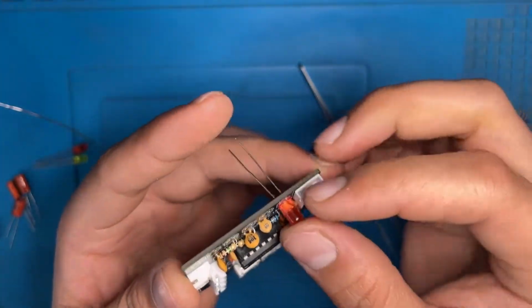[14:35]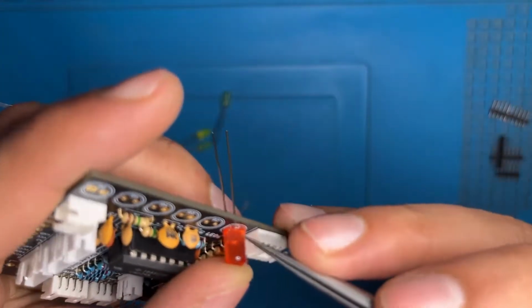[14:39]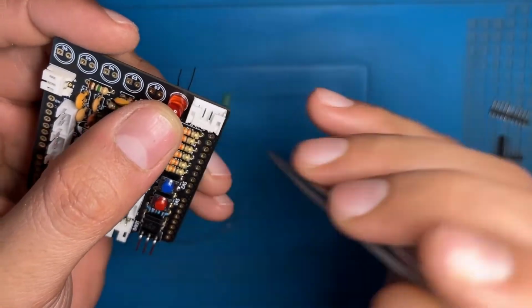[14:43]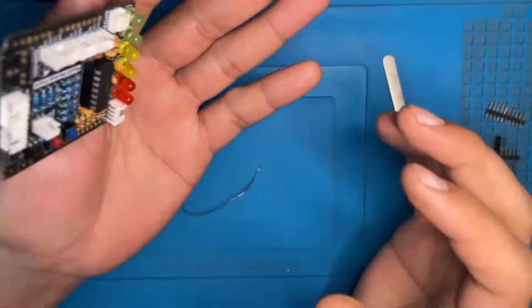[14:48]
This is the way the LED has to be inserted. You can see that the cut is over here. The LED and the design are the same, and the curved side is the same. Insert all the LEDs like this and turn it upside down by holding it from the legs.
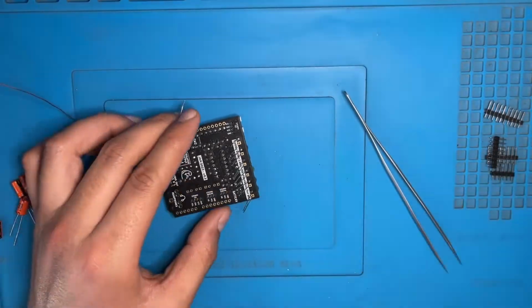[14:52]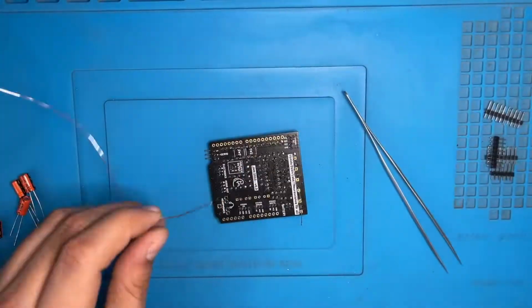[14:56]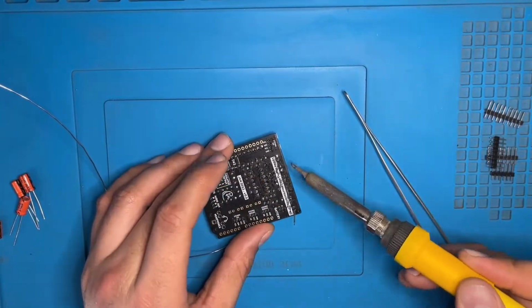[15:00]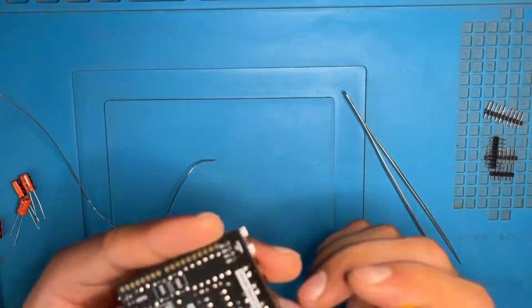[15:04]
Solder only one pin. After checking, you can re-solder and stack it into the right position. After you have confirmed, you can solder the other remaining pins also. Remove the extra solder from your LED. Now we have inserted the LEDs and soldered them properly.
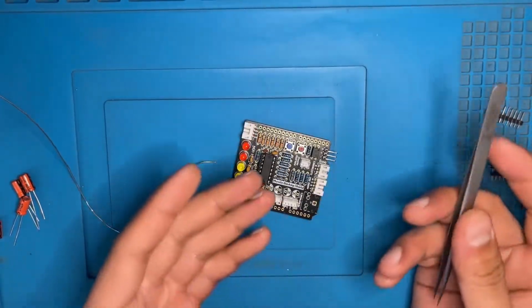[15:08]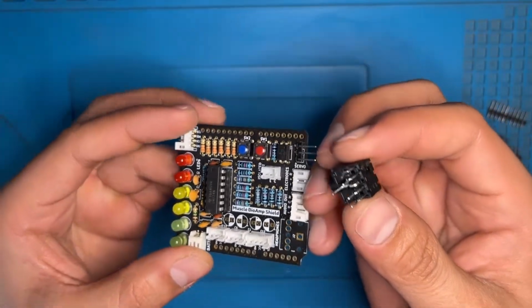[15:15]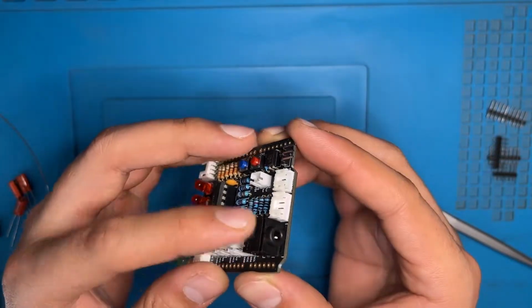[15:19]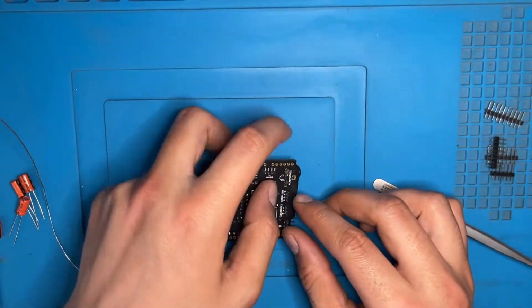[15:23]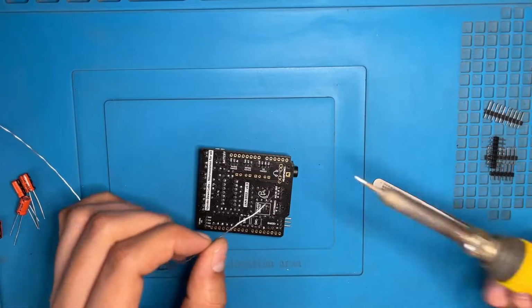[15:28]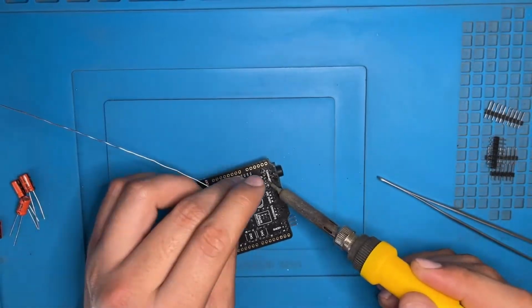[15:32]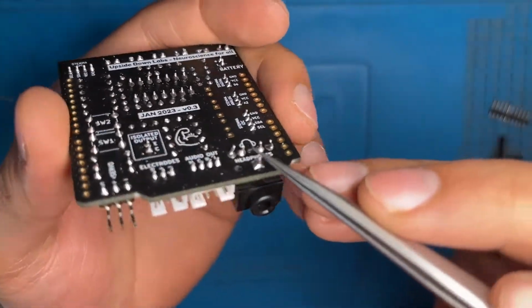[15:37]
So now we have the headphone audio jack. The location is J2. Here is the J2, inserted like the diagram on the PCB. Place your finger on the audio jack, turn it upside down, look at it carefully and admire the beauty. Solder a single pin of the audio jack. After checking the alignment, you can solder the remaining pins also. Remember, after soldering the remaining pins, check that no pins are interconnected to each other.
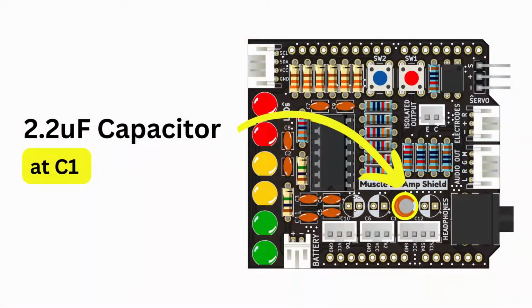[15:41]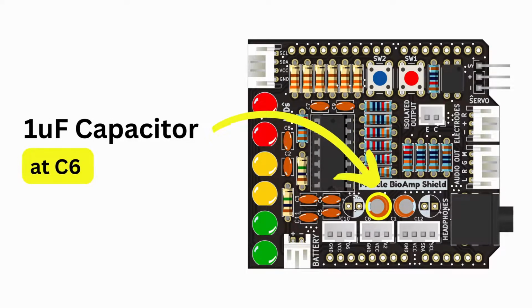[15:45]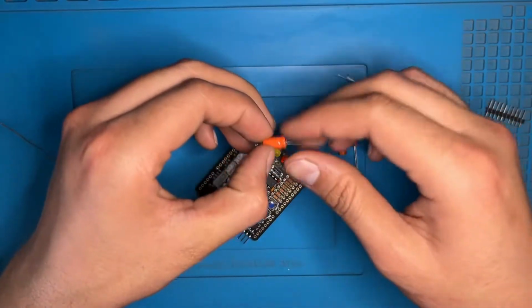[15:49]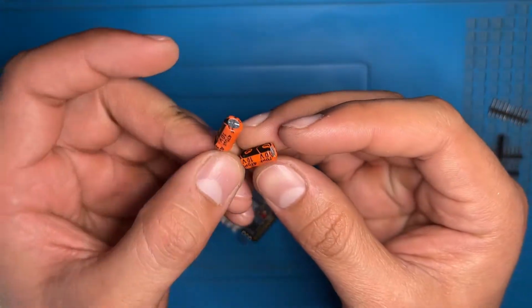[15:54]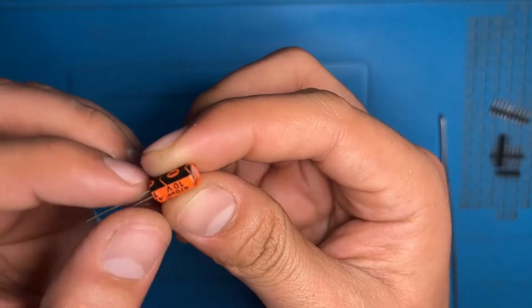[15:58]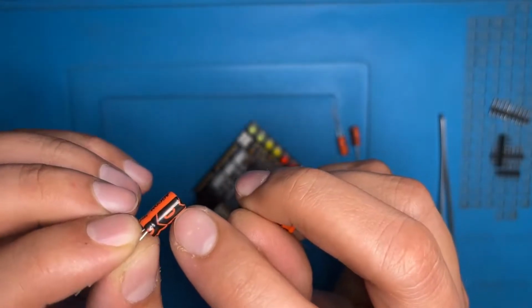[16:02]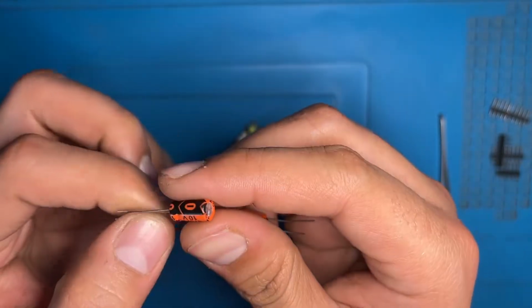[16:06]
Here we have the 2.2 uF capacitor, the location is C1, 1 uF capacitor location C6, and 470 uF capacitor locations C10 and C12. Like we did with the LED also, I am going to tell you the direction and the positive and negative of the capacitor here. Taking the 470 uF, the negative side has the black mark and negative mark on one side of the capacitor and the other side is plain. The black side is the negative and the other side is the positive.
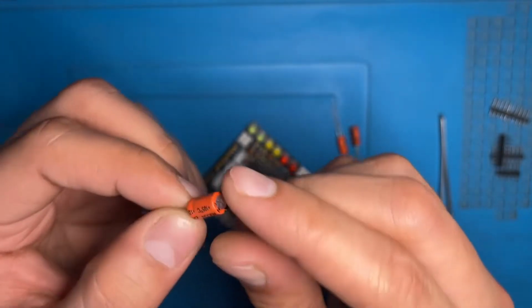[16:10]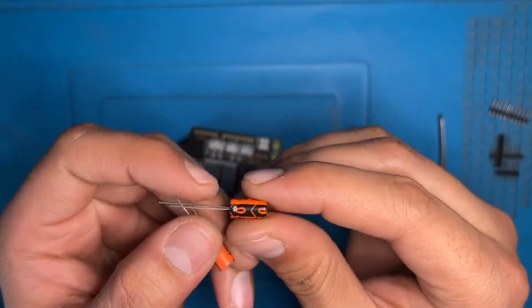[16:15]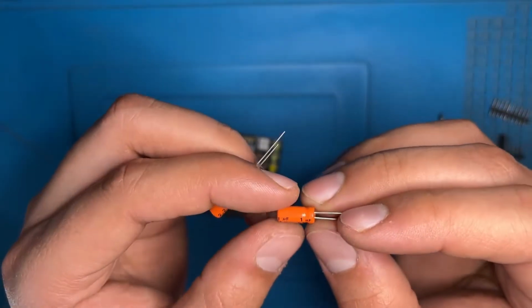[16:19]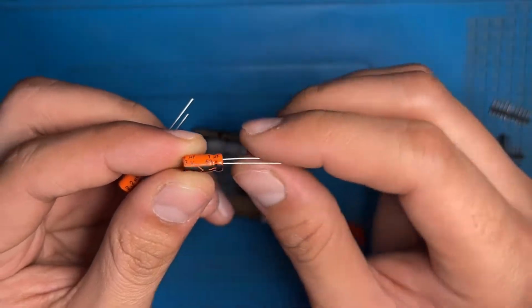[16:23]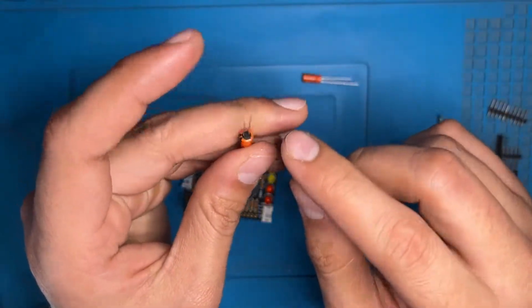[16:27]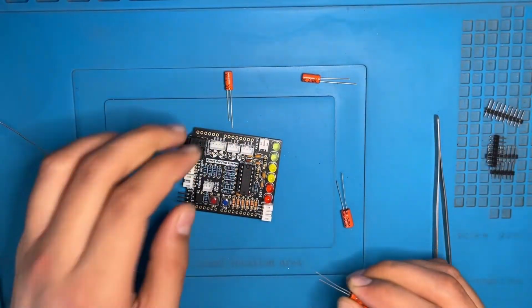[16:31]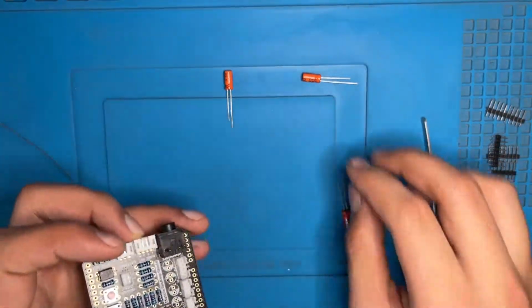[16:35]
The other way to check it is the longer leg is positive and the shorter leg is negative. The same is in the other capacitors also. Here we are seeing a 1 µF capacitor. The longer leg is positive and the shorter is negative. The 2.2 µF capacitor is also the same. Now without wasting time, we are going to assemble it. Be careful to check the mark.
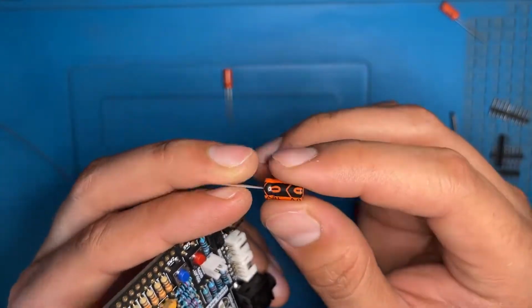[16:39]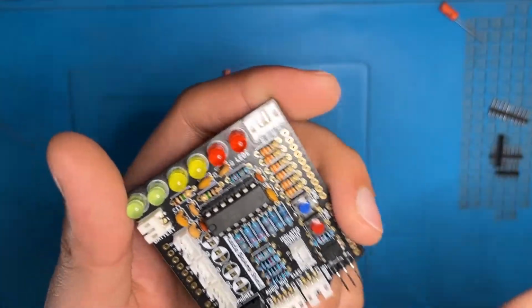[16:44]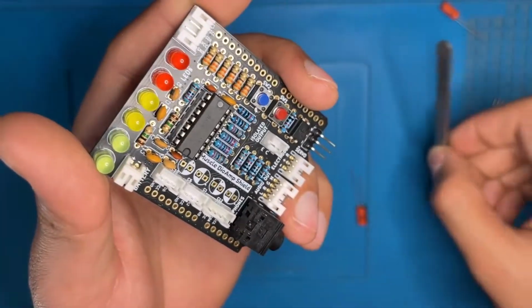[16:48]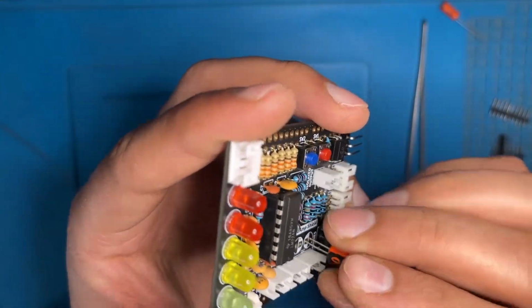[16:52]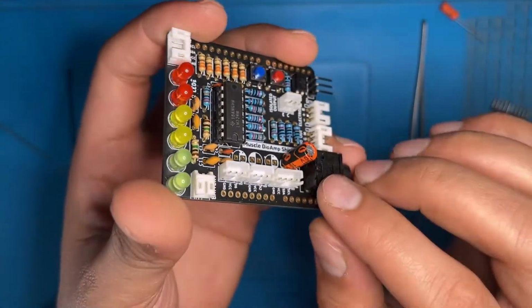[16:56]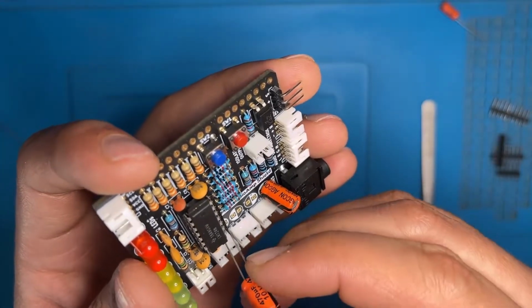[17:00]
Here the negative mark is to be inserted on the white mark of the capacitor designed on the PCB. You can see the white mark over here. This is the negative. Also on the PCB design, there is a positive mark on the plain side. Here you can see that this is negative. In the same way, we are going to insert the capacitor. We have inserted both the 470 µF capacitors now.
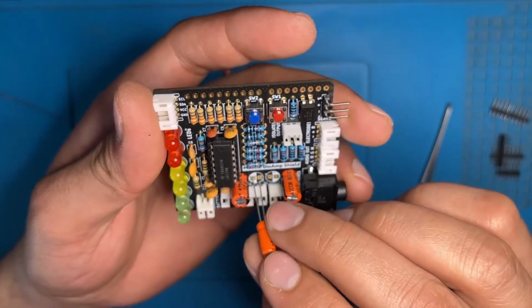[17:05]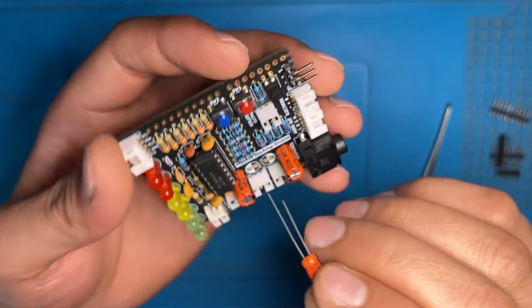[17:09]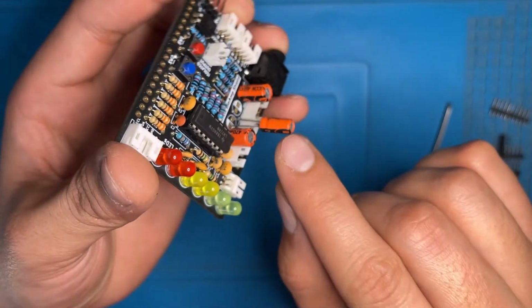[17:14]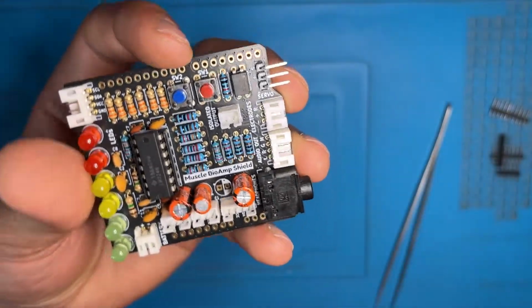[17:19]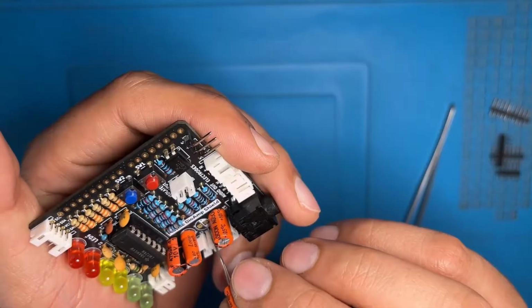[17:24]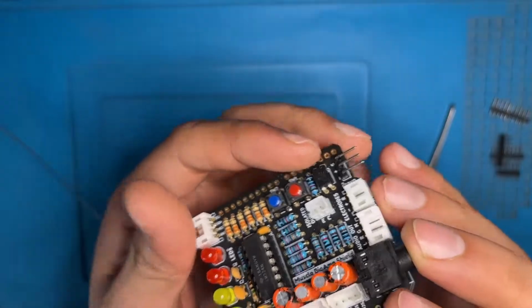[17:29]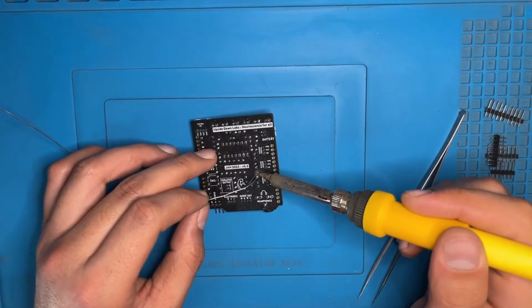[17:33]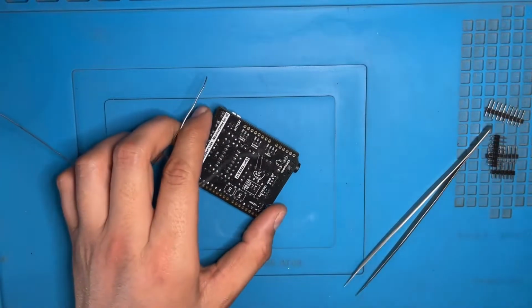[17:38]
Now we are inserting the 1 µF in the location, but here we are doing it wrong. As you can see, the negative mark is on the positive side. So be careful and do not make silly mistakes like me. After checking the placement properly, we have inserted it in the right direction. Congratulations for that. Take the 2.2 µF capacitor also. Check the direction properly. Ta-da. Now solder one pin of the capacitor and check that the placement on the PCB is properly done.
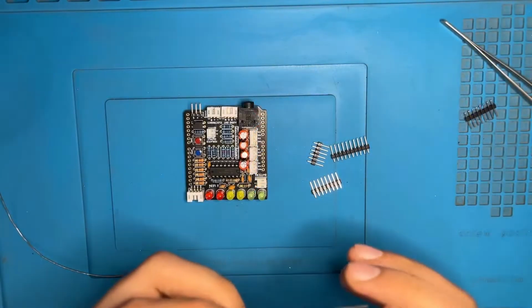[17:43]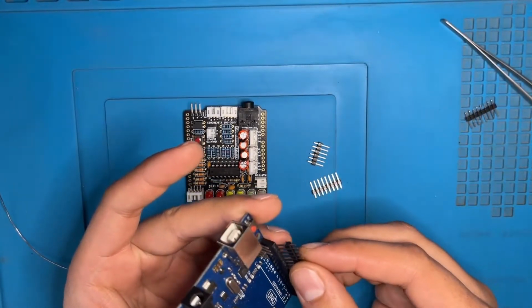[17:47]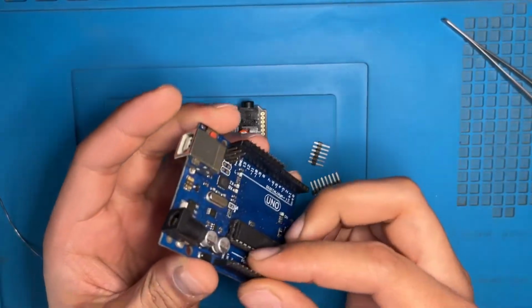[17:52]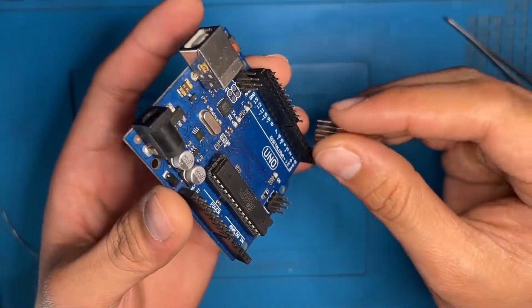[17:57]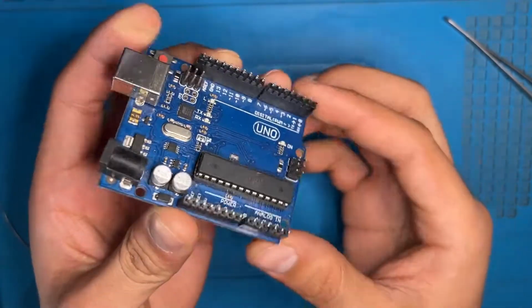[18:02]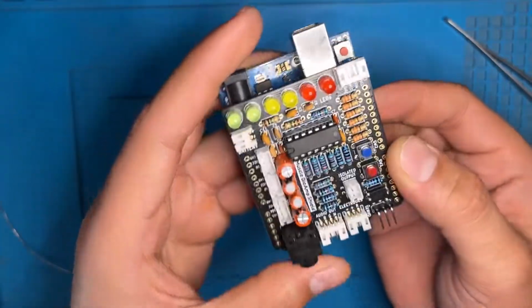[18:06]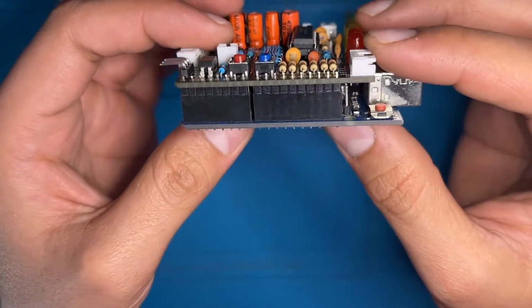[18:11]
Now we have the header pins to assemble. Take an Arduino. Insert the pins in the Arduino. Put the longer leg in the Arduino and the shorter leg upside, because the shield will be inserted on the shorter legs and the longer legs should be in the Arduino. After this, stack your shield on the Arduino and like this the pins will come out of the holes of the shield. Check that the shield has been stacked properly on the Arduino.
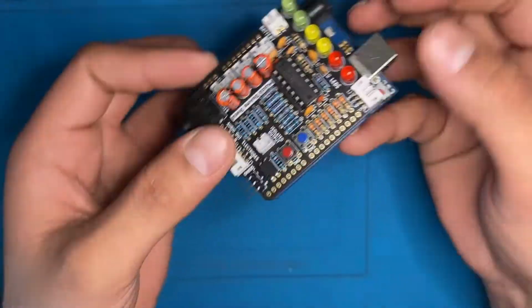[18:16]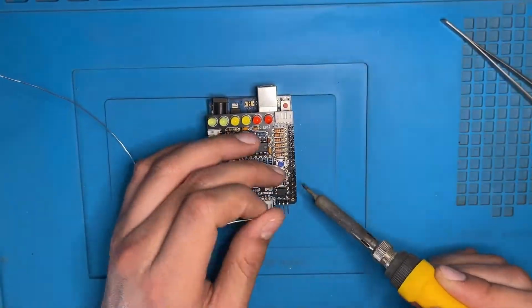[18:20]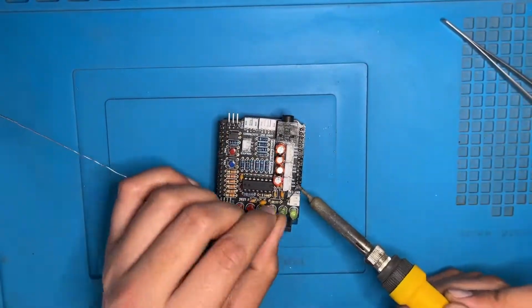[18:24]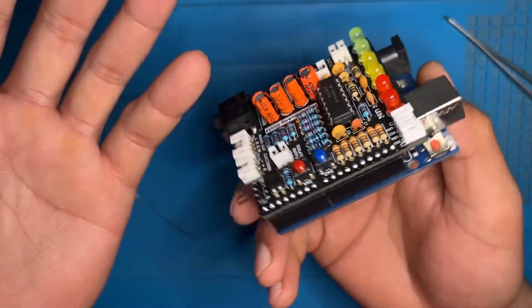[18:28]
Now again we are going to solder it. It looks good. As I promised you, at the end it will be worth it. Now slowly we have reached our destination. And congratulations again for that. Here we have assembled the shield like this.
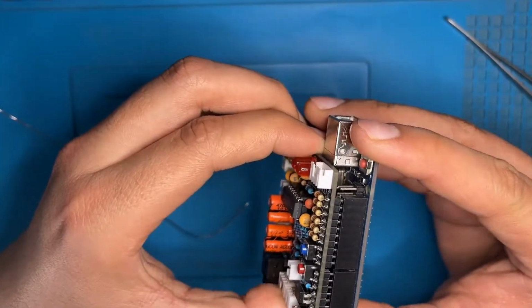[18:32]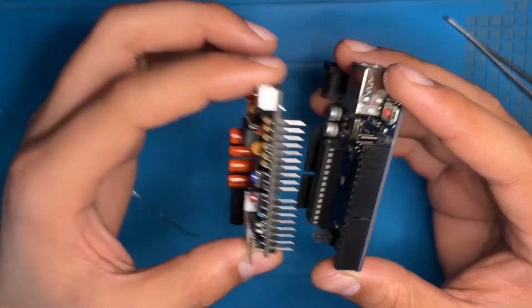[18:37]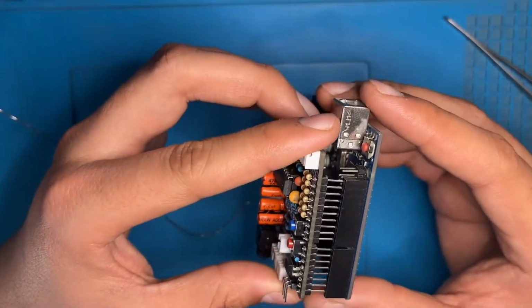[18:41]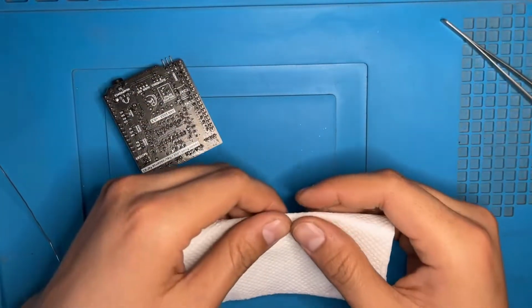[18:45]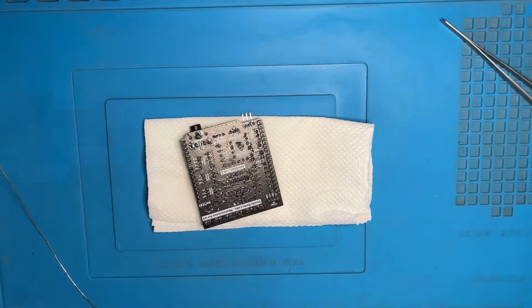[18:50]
I know you are too powerful for this, but do not show your power here. Be gentle with the shield and pull it gently from the top and bottom. By doing this, you will not damage the pins of the shield you have assembled. Now here I am taking a tissue paper so that it will collect all the extra flux that will be separated from the shield by cleaning.
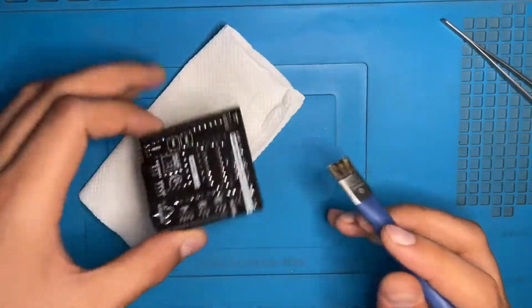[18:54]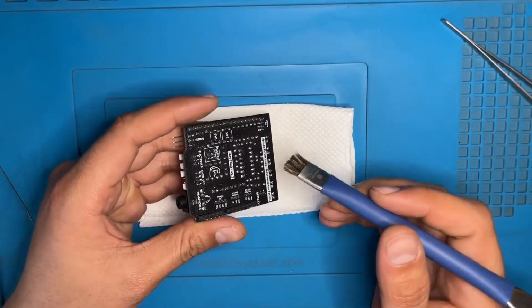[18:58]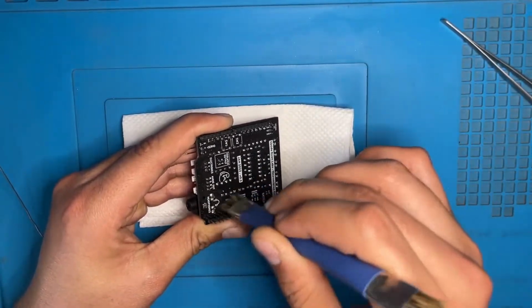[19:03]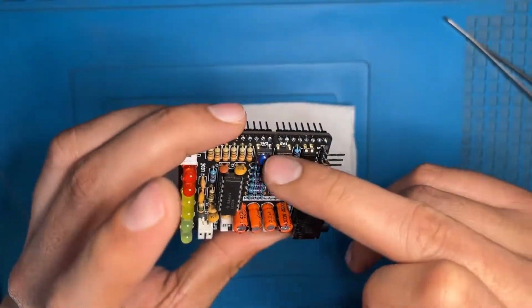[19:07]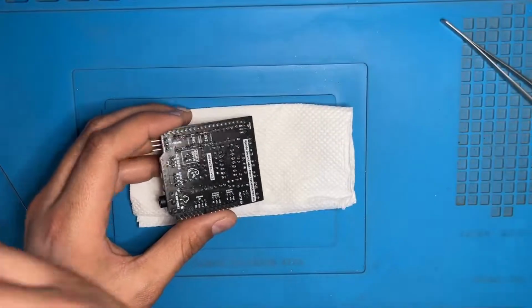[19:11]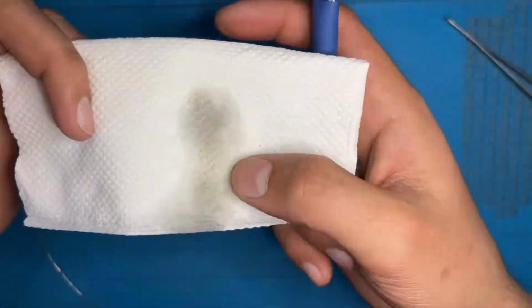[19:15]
I have taken IPA on the brush. Stroke your brush in one direction only. Don't do it upside down again and again. You can see the extra flux over here that is caused by the soldering. It may vary with the soldering wire that you are using. Here you can see that the extra flux has been collected on the tissue paper.
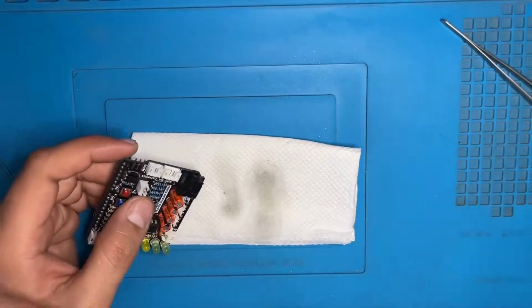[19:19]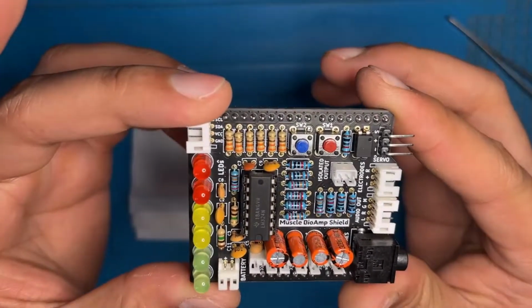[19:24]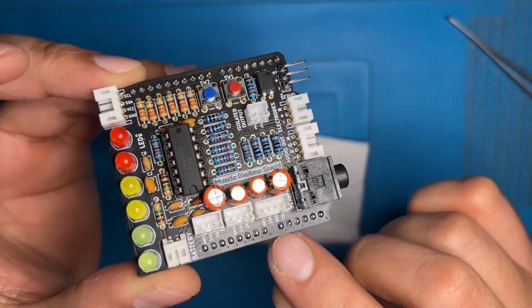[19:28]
It also removes all the dust and other materials from your PCB and makes it as clean as new. Now you can see how clean it is. Now we have successfully completed our task of assembling the shield.